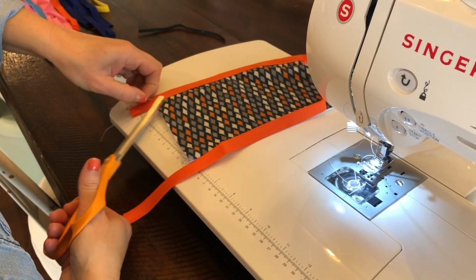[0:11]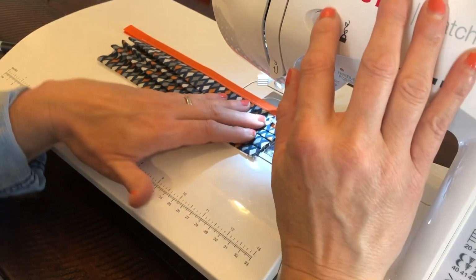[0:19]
I'm here to show you today how we're making our homemade medical grade mask that will protect you when you have to be within that 6 feet distance. So during this COVID pandemic, I want to show you how to make at least a protective barrier for you and your patients so that we can still take care of our patients that are healthy.
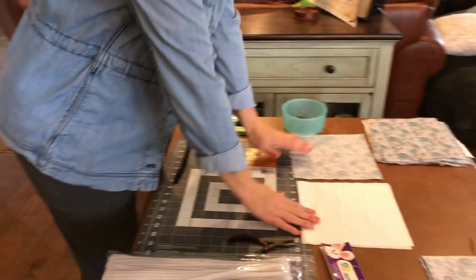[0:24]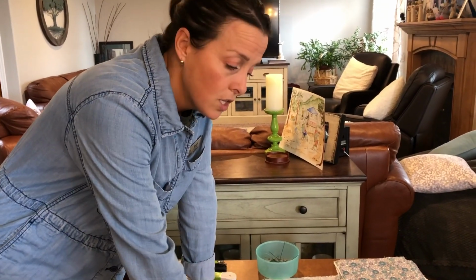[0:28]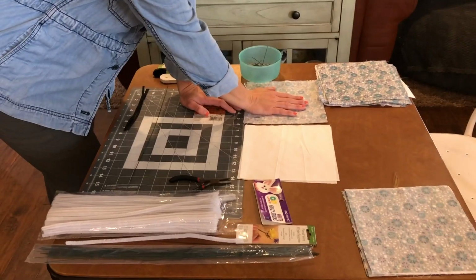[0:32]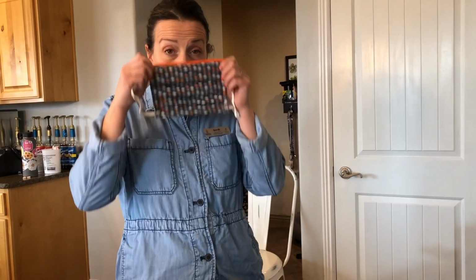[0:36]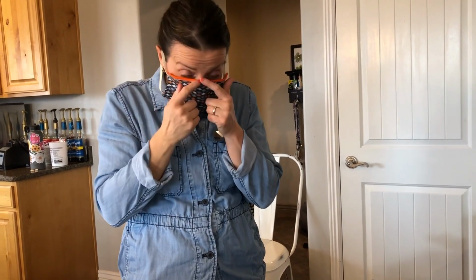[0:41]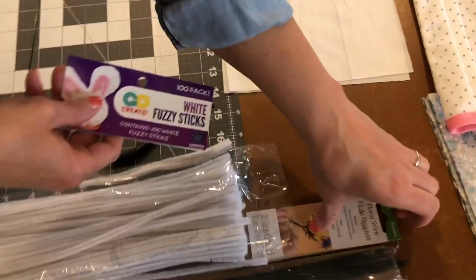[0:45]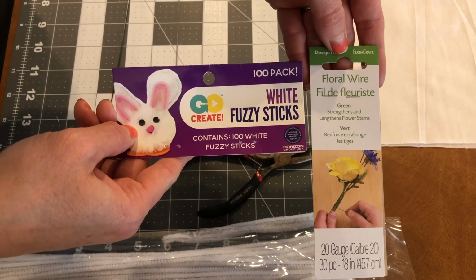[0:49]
So all of my fabric, my favorite length is 8x9. So 8x9 inches on my muslin, 8x9 inches on my 100% cotton fabric. Any fabric pattern will do. So this is my medical grade mask. It has elastics for easy on and easy off. And then it has a wire up here that I can pinch around my nose. You can either use floral wire or you can use the pipe cleaner.
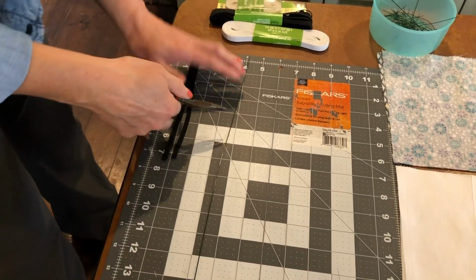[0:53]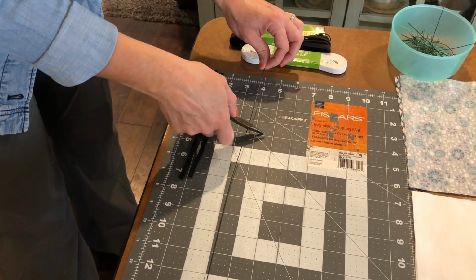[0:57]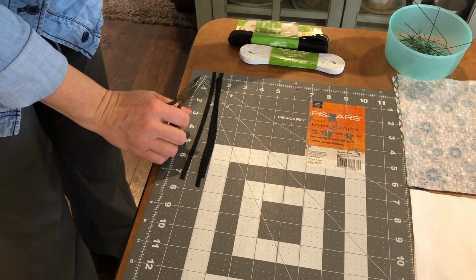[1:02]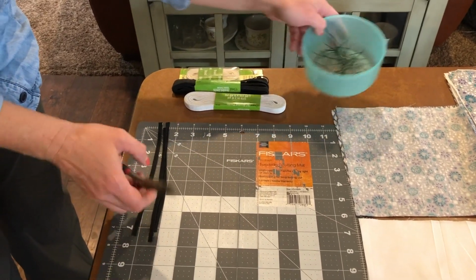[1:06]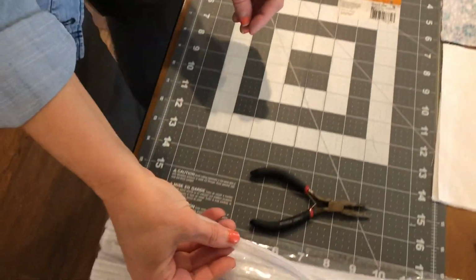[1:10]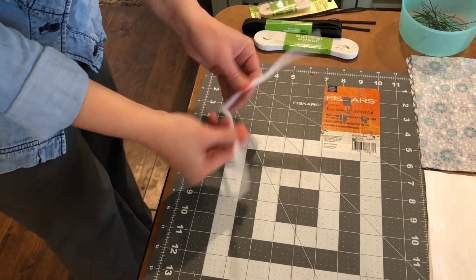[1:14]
So if you're doing the floral wire, I found that you really don't need anything more than 4 inches, okay? So I'm just cutting these right at 4 inches. And then I'm just saving those in a bowl for me to use later. The pipe cleaner, the fastest and easiest way is just to fold it in half. The 6 inches isn't gonna matter. It's pretty soft and flexible. You do need a double fold so that it maps across your nose better.
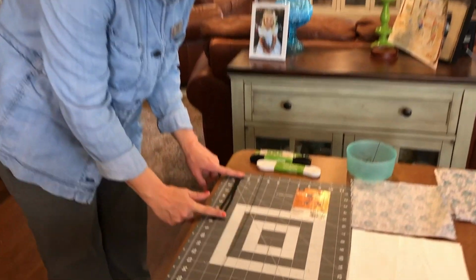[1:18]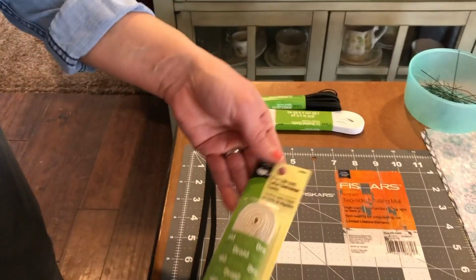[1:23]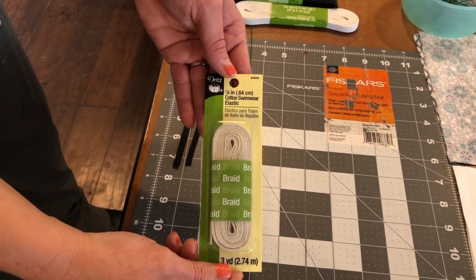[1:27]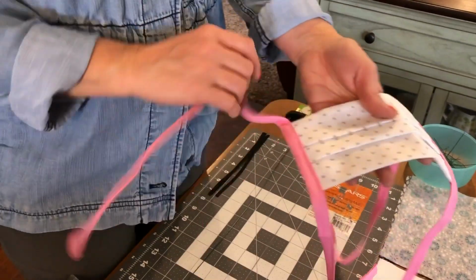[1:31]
The elastic's 7.5 inches. My favorite elastic for my medical ones is a 1/4 inch cotton swimwear elastic. It's really hard to find anything 1/4 inch these days, so I'm going to show you how to do it with ties, and that's just from double fold bias tape.
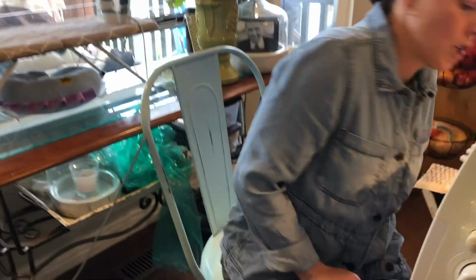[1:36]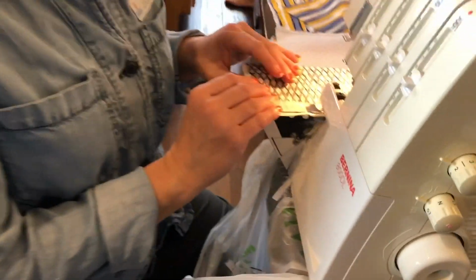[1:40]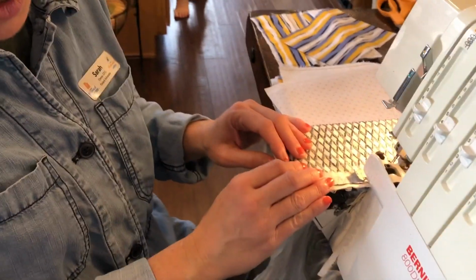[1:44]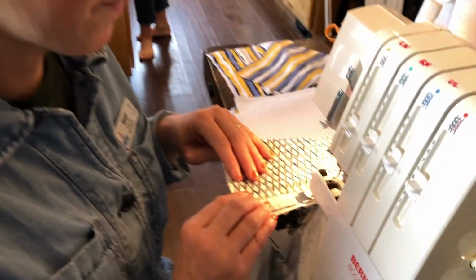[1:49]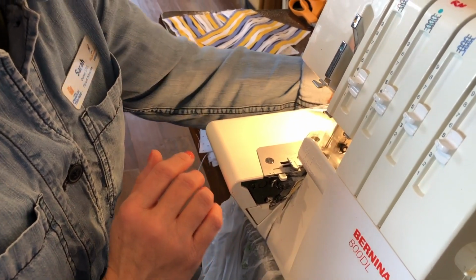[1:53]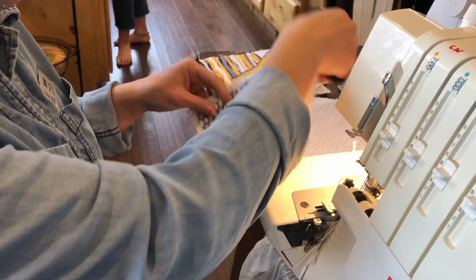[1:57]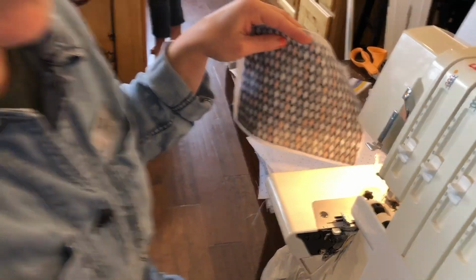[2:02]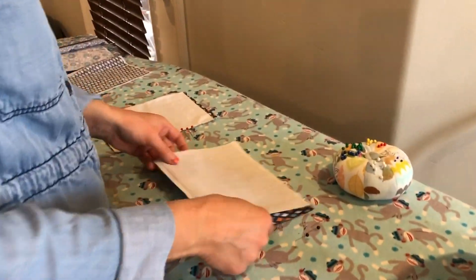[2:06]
So here in my serger, I've got set up an 8x9, and you can tell that oftentimes they don't match perfectly. My kids are cutting them, so that's fine. The beauty of the serger is it cuts off what I don't like. So we'll just finish this one off. And on the medical ones, you're only going to sew one side. Okay, so now let's go to the ironing board and make a nice crisp edge.
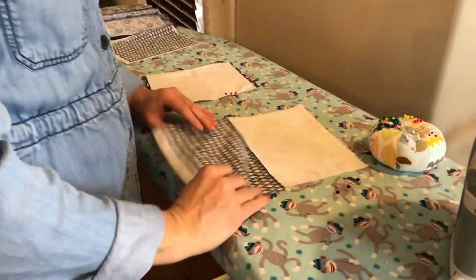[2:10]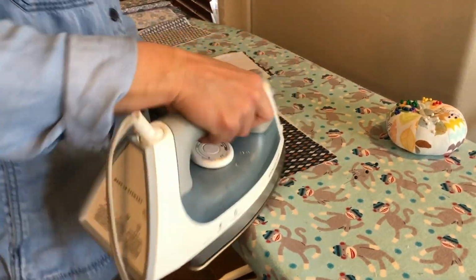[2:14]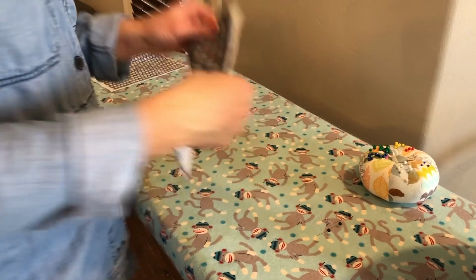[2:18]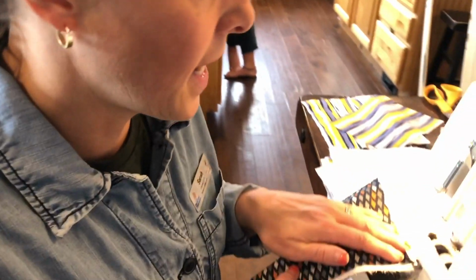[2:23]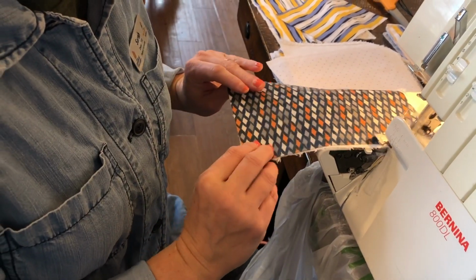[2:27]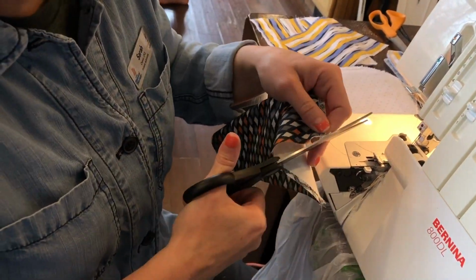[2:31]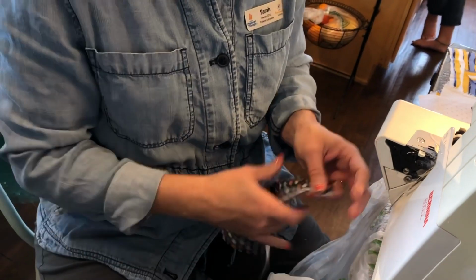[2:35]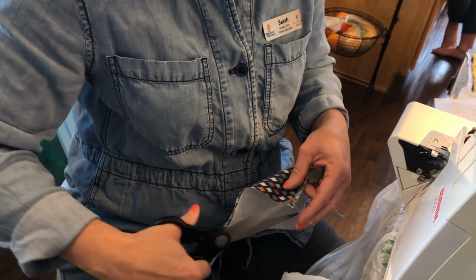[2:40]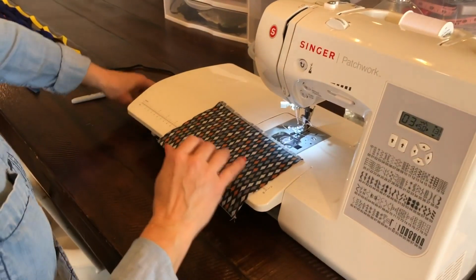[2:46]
This is now the bottom of my mask. Now I'm gonna go back over to my serger and we're gonna serge the top half. Again, making it nice and square. Cutting off what I don't need. Okay. And if I can, I knot it up by just pulling on the loose thread and it knots it for me. And now I'm ready to go to my sewing machine.
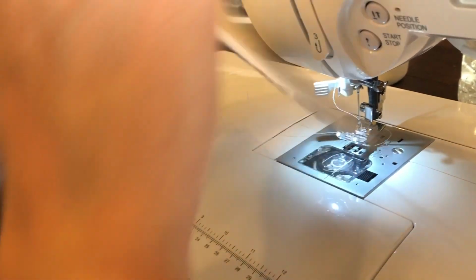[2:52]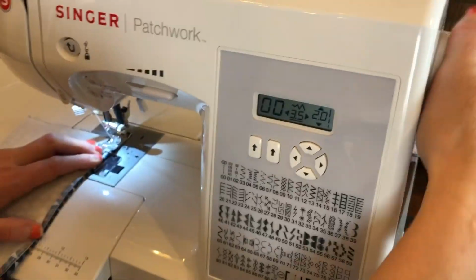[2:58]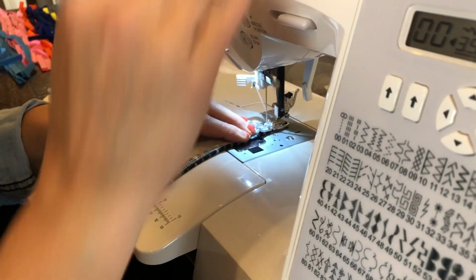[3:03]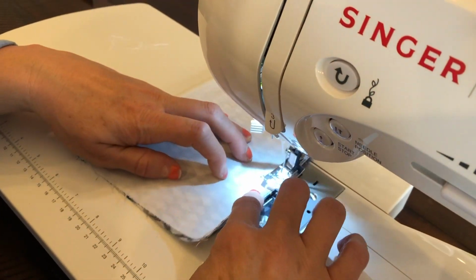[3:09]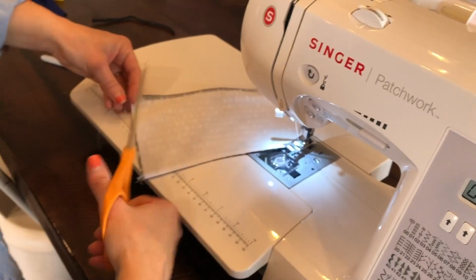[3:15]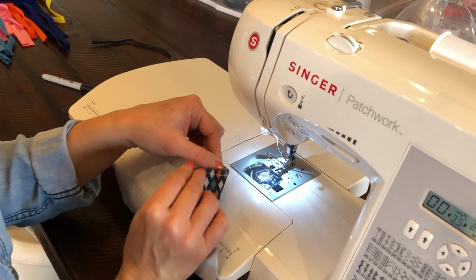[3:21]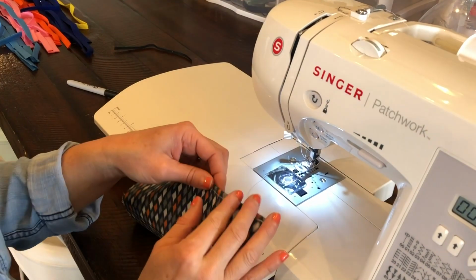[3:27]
Okay, on my sewing machine, this is where I'm going to start off with my floral wire. So I just tuck it right in on the inside of the seam. I'm going down to a 2-length stitch. And I'm gonna just create this seam. And I'm just keeping that tucked up inside of there so I don't hit it with my needle. Now I just have to find my wire and the edge, and I just find the edge by finding a bend. It's easier for me to sew it if I have a pattern to go against, because then I can memorize where it's at. So it's right there on the edge of that orange diamond.
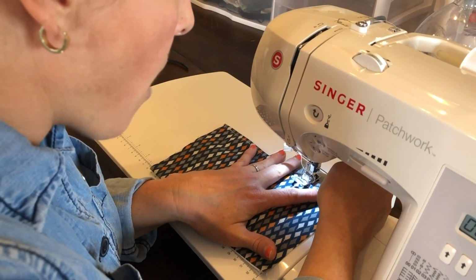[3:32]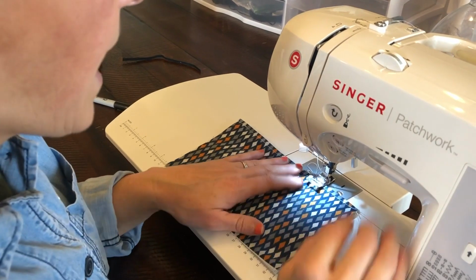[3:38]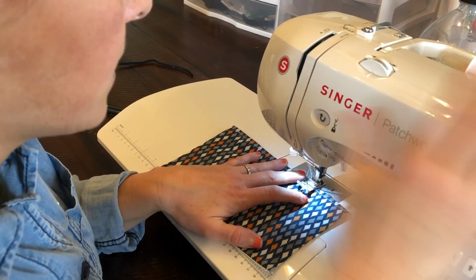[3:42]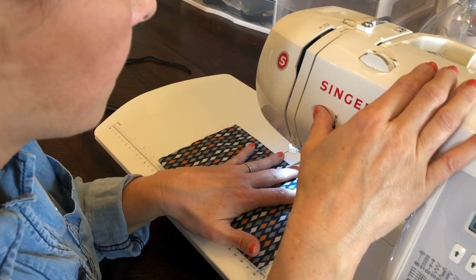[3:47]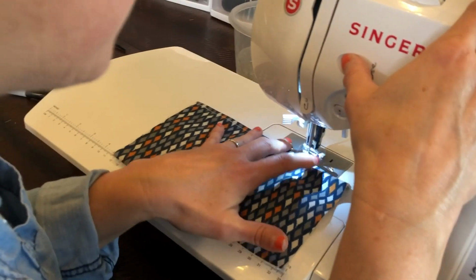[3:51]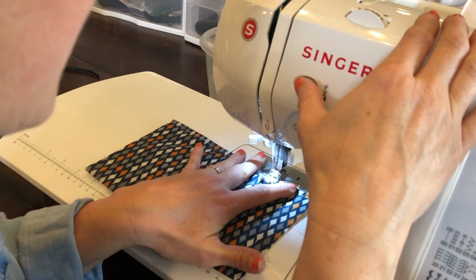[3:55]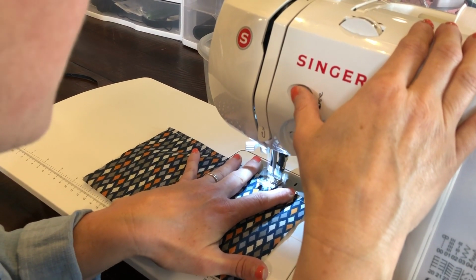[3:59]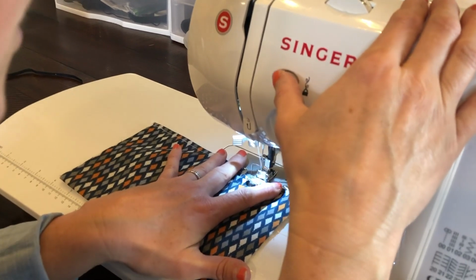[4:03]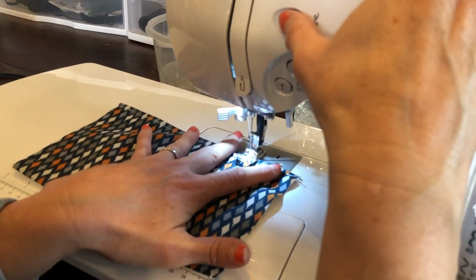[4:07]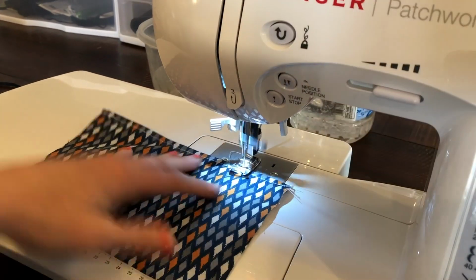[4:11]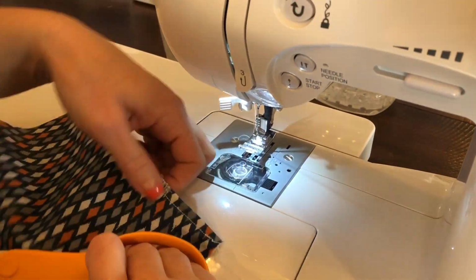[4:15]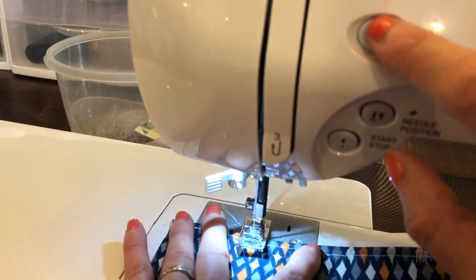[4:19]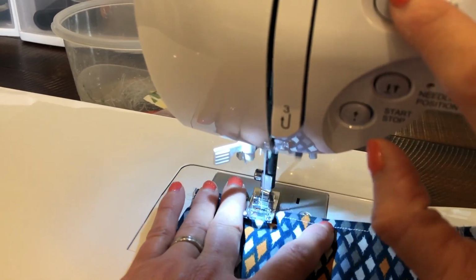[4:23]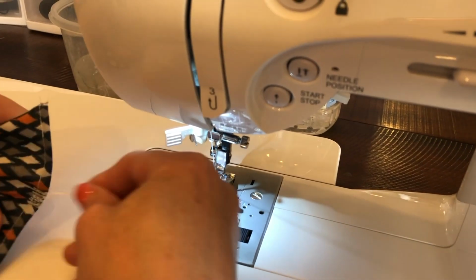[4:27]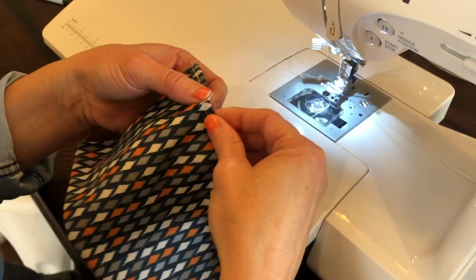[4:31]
And I'm gonna go about 1/4 inch on the inside of it, and then 1/4 inch on the outside of it. So I'm gonna go up to 2.5 on my stitch length, and I'm gonna start it with my hand, and I'm just gonna go back and forth. And I'm going right over top of it, and this is securing it in place. I'm just slowly moving down to my right. Not only does it secure it, but it also creates this nice thick barrier on the fabric so that the end of the wire doesn't poke through, because it will. Okay, and we're gonna do the same thing on the other side. All right, so now I can feel that it's in there.
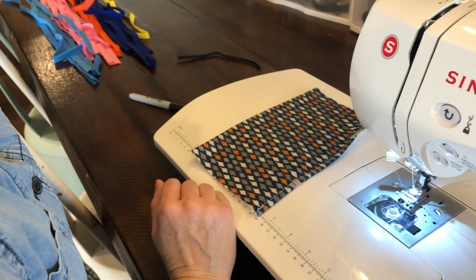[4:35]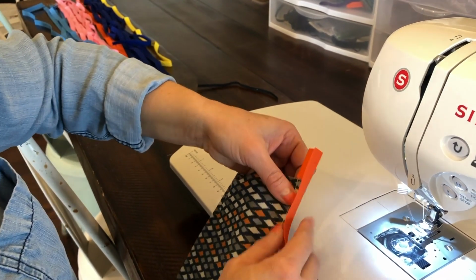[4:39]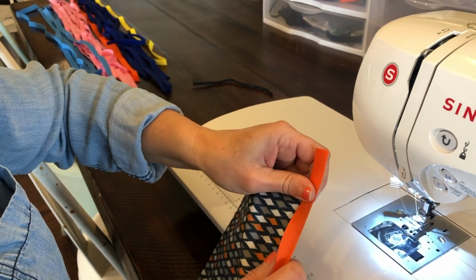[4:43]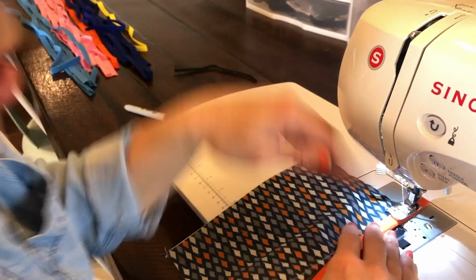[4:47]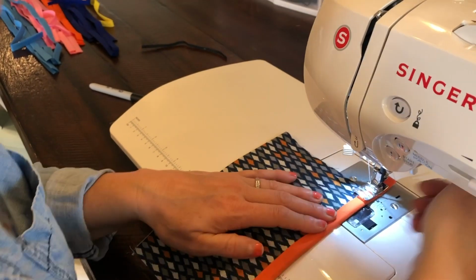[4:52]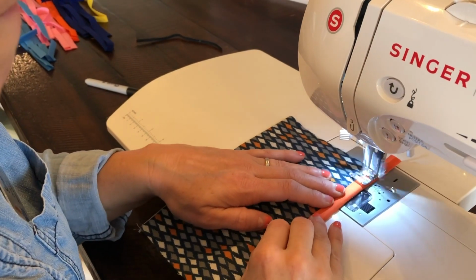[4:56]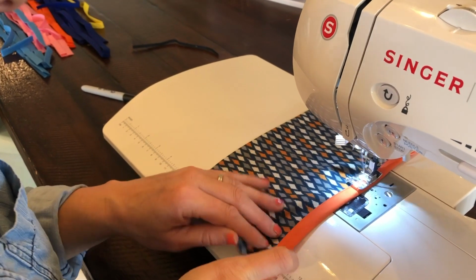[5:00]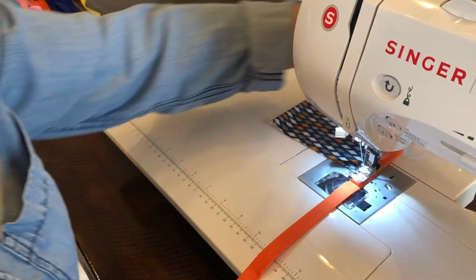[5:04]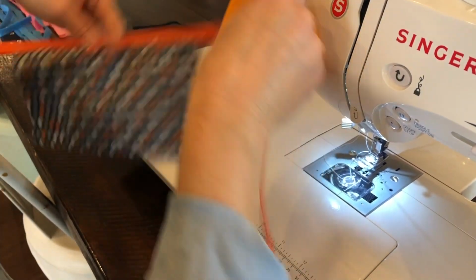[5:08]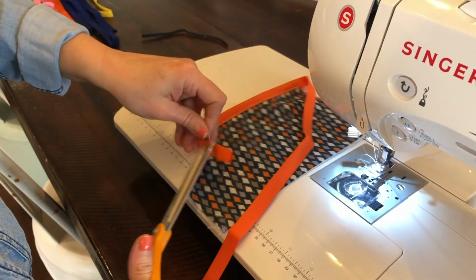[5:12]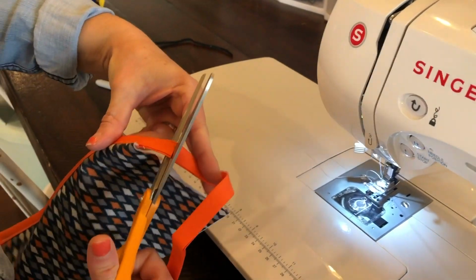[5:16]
Okay, now we do the fun part. This is that double fold bias tape, and I'm gonna have it be about 1 inch coming over the edge. All right, so I'm gonna sew that into place. I'm gonna go back down to a 2-length on my stitch. The difference in my mask has been completed. Now I have done the hardest part of that whole project, okay?
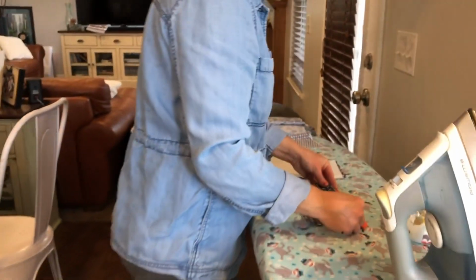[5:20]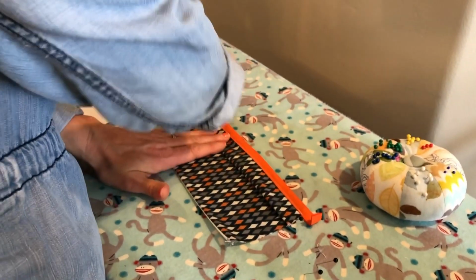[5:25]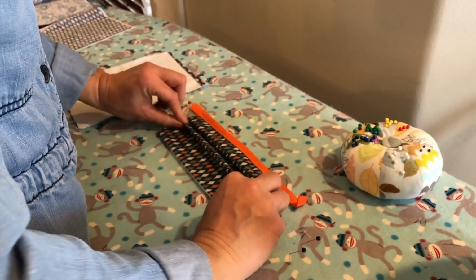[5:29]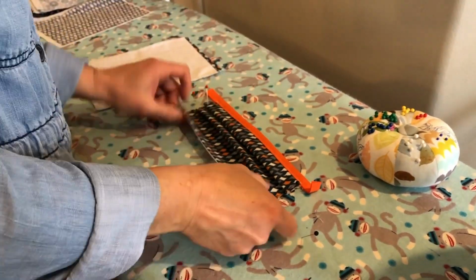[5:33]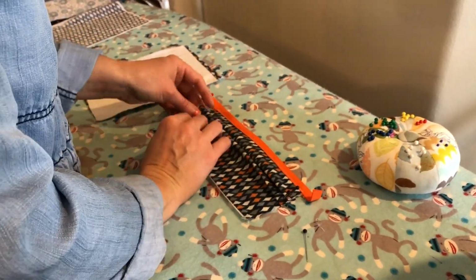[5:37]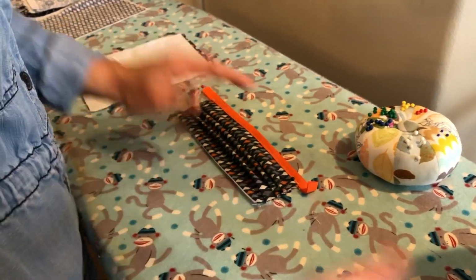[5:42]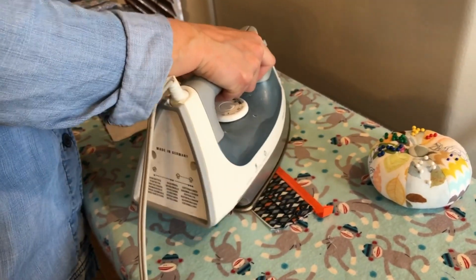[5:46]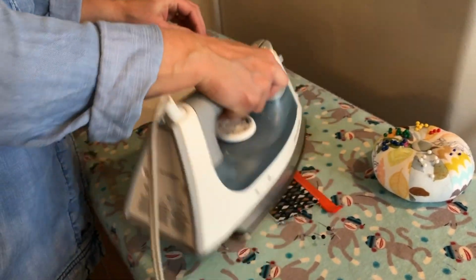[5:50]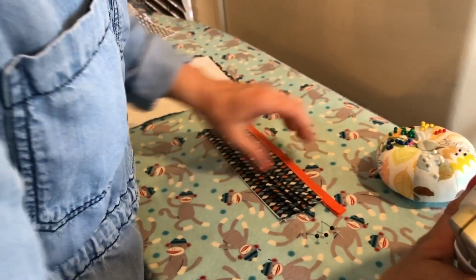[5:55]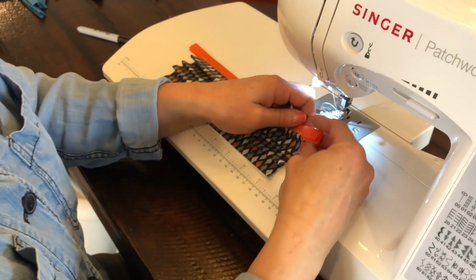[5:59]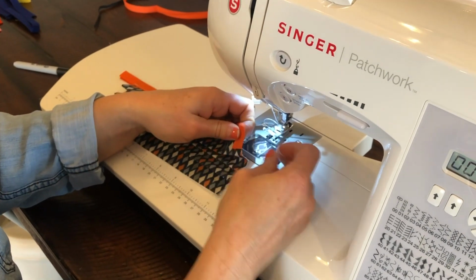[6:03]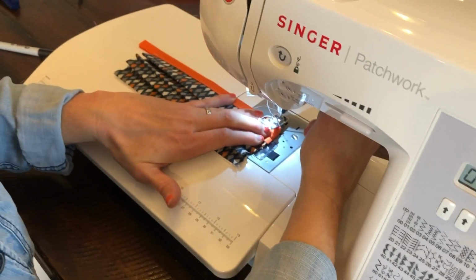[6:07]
Okay, let's go back over to the ironing board and we're gonna do the pleats and finish off the mask. We're gonna make three pleats. I have found this three pleat method to be the most comfortable. Don't stress out if some pleats are bigger than others. It's not a big deal. Just as long as you've got three pleats in there, okay? And then with your hot iron, you're gonna steam that down. Pull out my pins as I go. Okay. All right. Now we're gonna go back over to the sewing machine. Okay, we're gonna stitch this down.
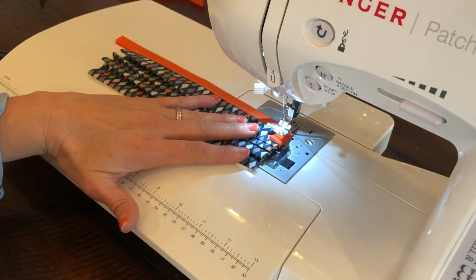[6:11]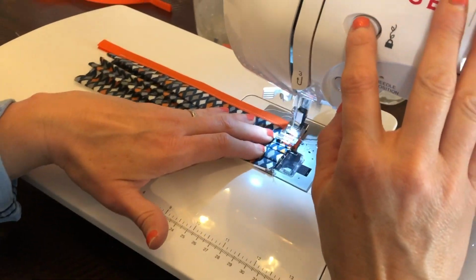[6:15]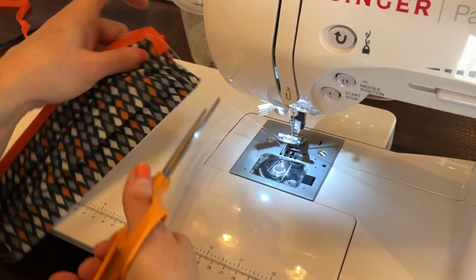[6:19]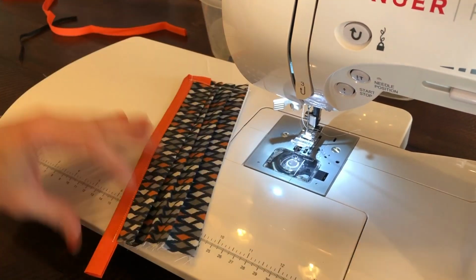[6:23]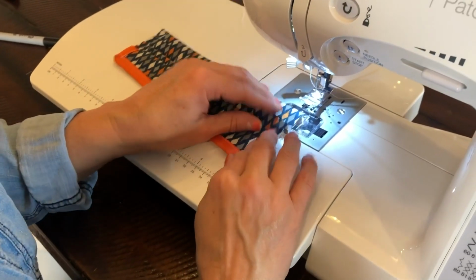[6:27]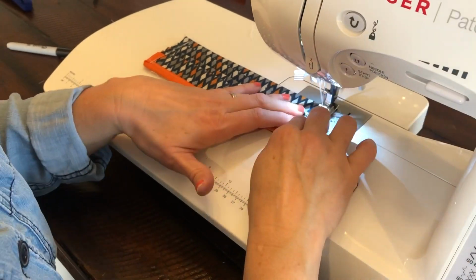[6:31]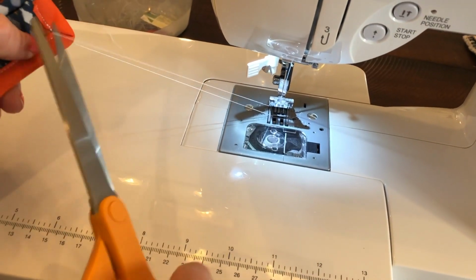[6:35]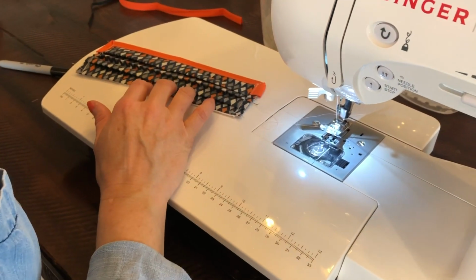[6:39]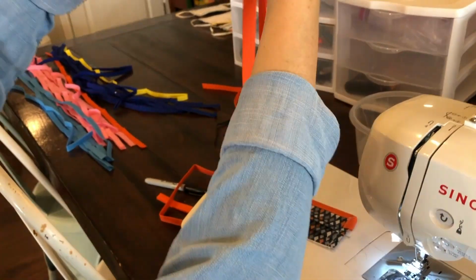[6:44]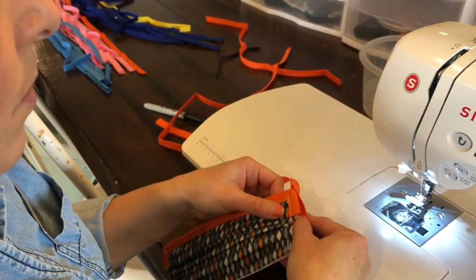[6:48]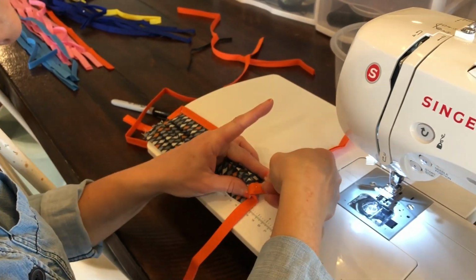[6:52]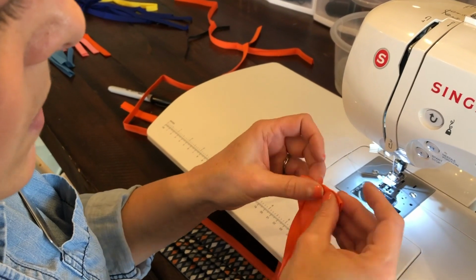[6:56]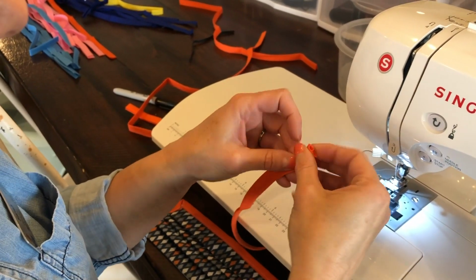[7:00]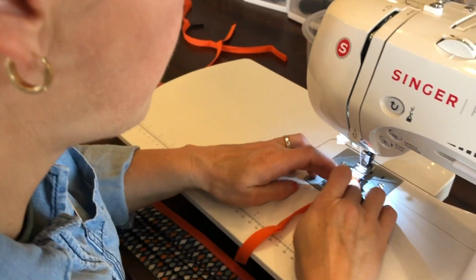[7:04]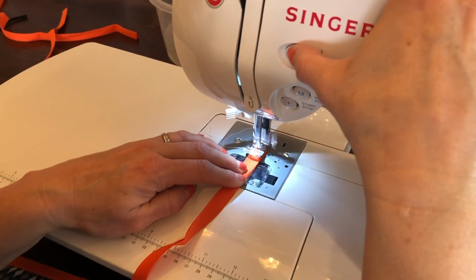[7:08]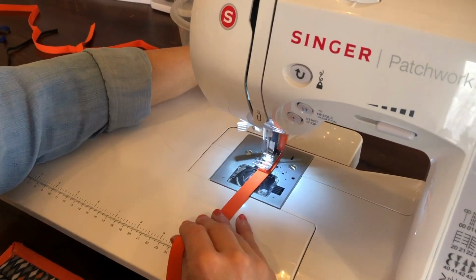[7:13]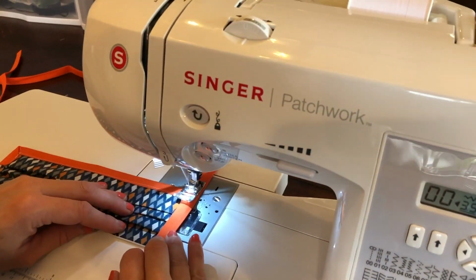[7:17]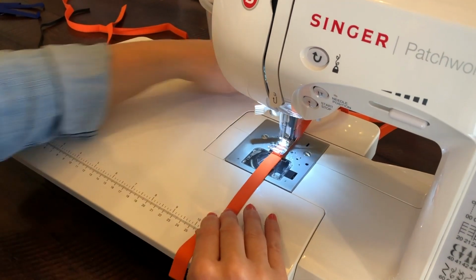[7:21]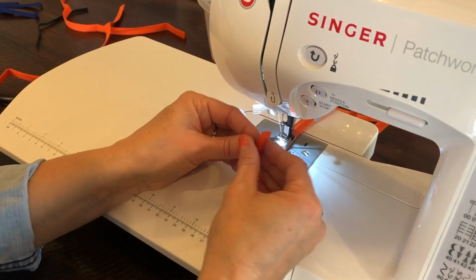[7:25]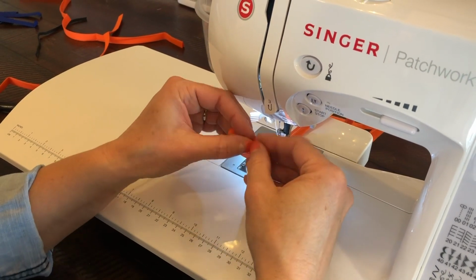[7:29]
So I'm just gonna grab two orange ties that match. Again, these are 32 inches in length. So just find the halfway point and I'm putting it there about halfway through my mask. And then you'll want to just pin it. And then the end, you fold it down to finish. And you'll want to backstitch this. And then as I get down to the end, I'm just going to finish off like I did the other one, opening it up and folding it in. Okay.
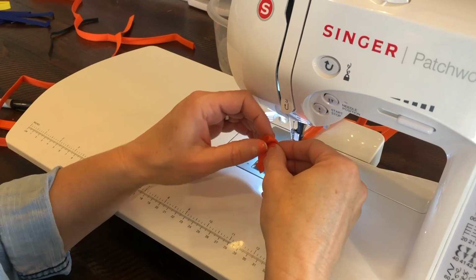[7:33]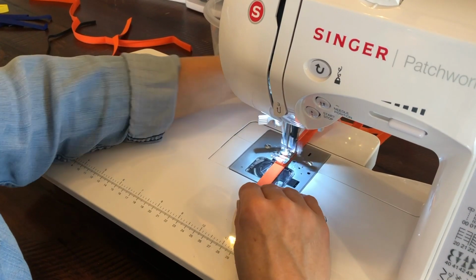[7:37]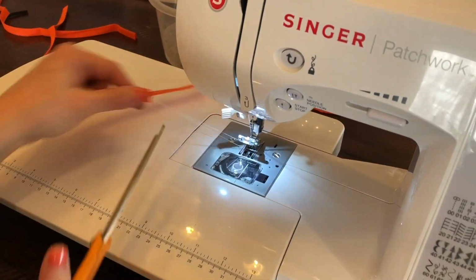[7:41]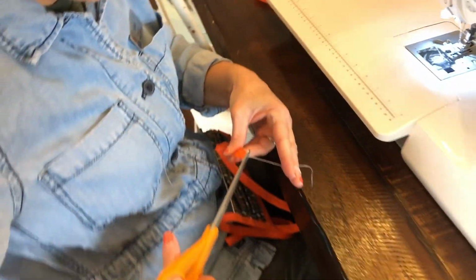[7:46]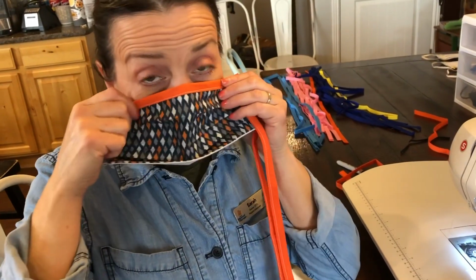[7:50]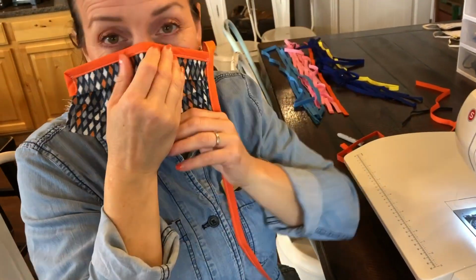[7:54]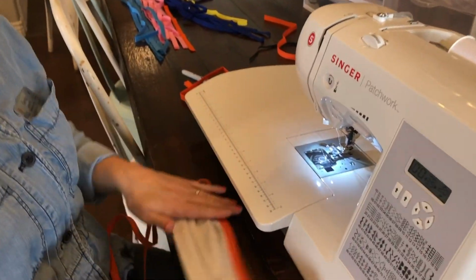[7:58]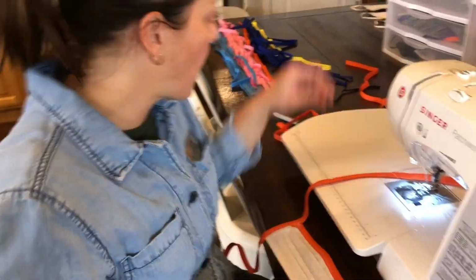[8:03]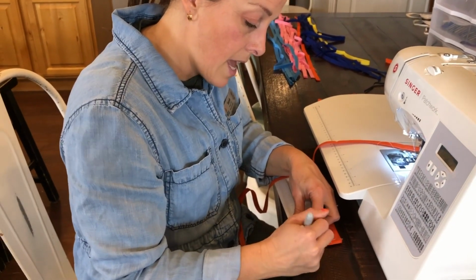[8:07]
On average, they're taking us about 15 to 20 minutes per mask. And then you've got your finished mask. And just fold it and then you just tie it up over and it works great. And then again, for our clinic, if you're keeping these and you're giving some out to your other clinics, I just write UPT on it for our initials. And then I'm gonna say this is a medium mask.
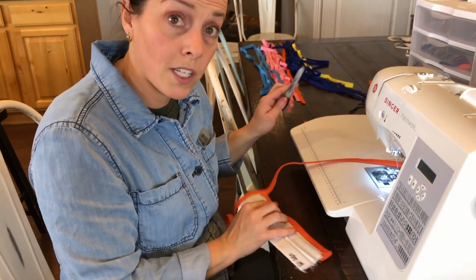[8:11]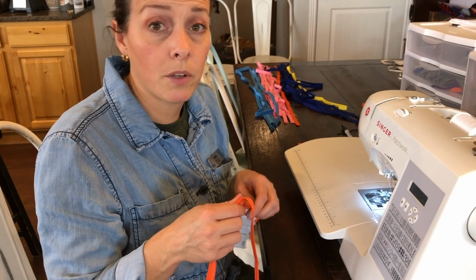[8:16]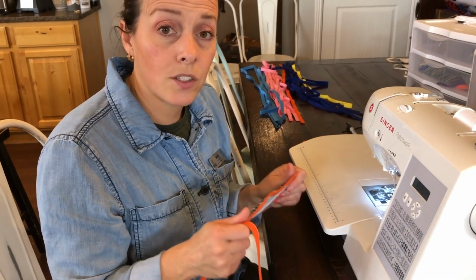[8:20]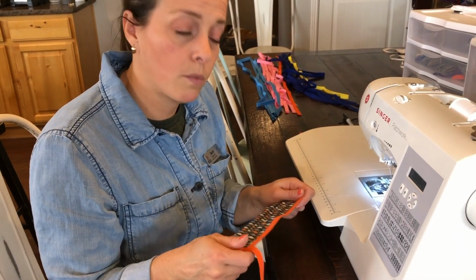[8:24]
And then we'll wash these like I discussed before in my other video with a quarter cup bleach in our sanitary wash, and then we use antimicrobial dry with some dryer bouncing balls. And then we only handle these with clean gloves, a mask, and that we washed our hands before we put on our gloves. So we only handle these in a very clean environment.
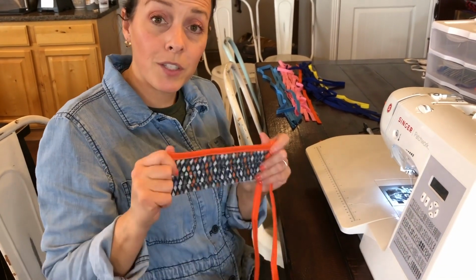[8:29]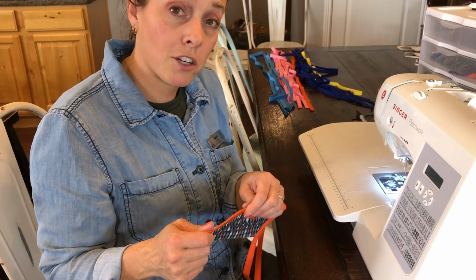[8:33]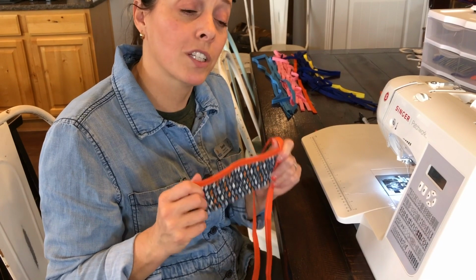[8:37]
So this is what we're using until we can get masks available from manufacturers. Right now we can't. So this is a good alternative in order to keep your clinic doors open and be able to keep treating your patients.